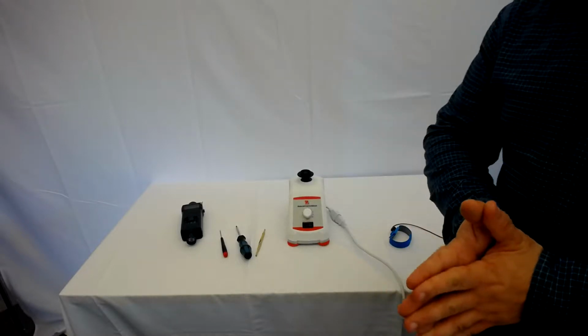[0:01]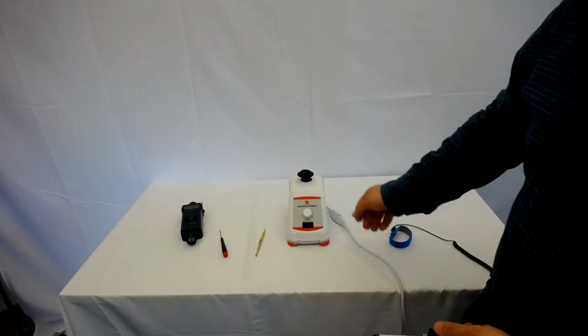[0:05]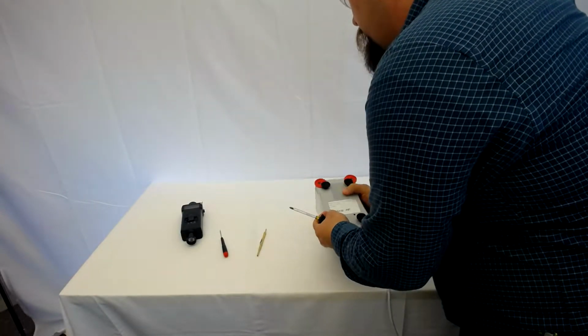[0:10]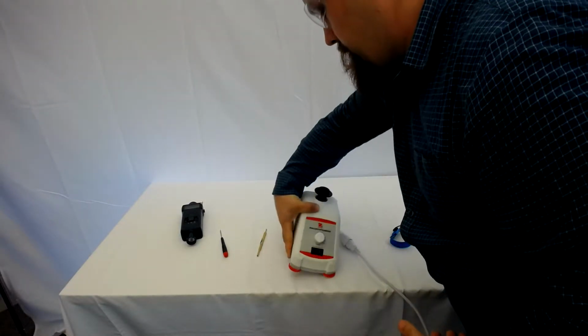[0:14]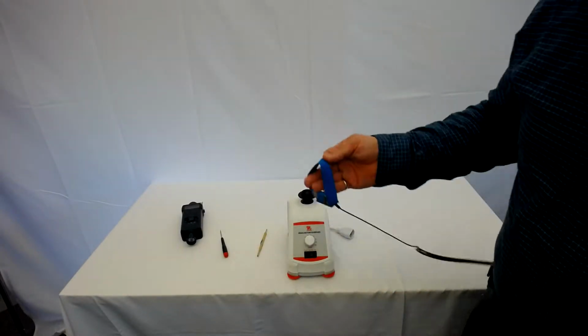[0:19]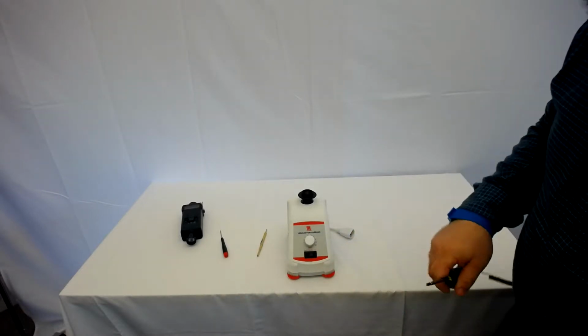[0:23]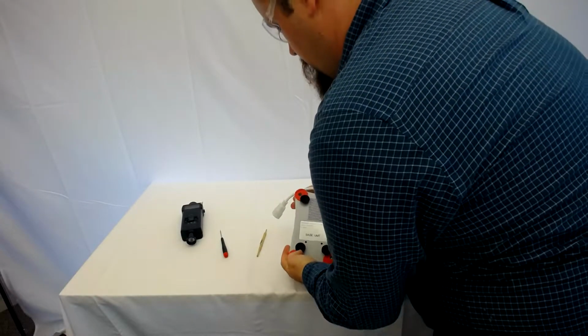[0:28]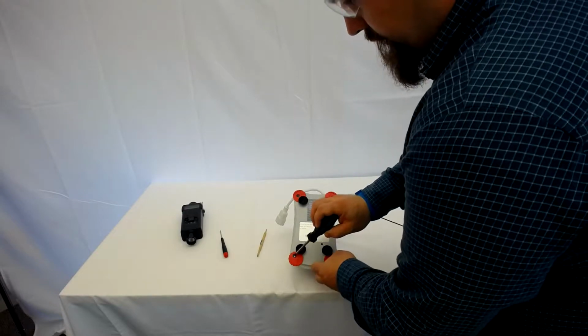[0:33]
So to start to take this apart, you are going to take your screwdriver, flip the unit over. There are 4 screws that you're going to take out now. Right now, we're going to have this unplugged. Again, always use your ESD protection. Flip the unit over. 4 screws here, here, here, and here.
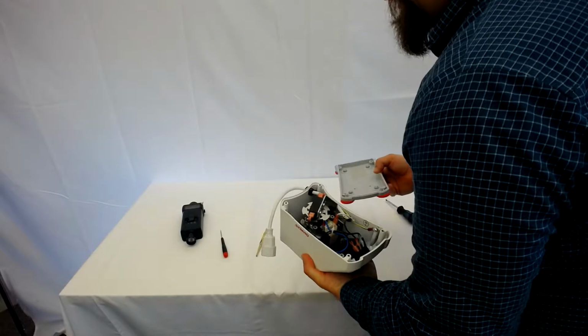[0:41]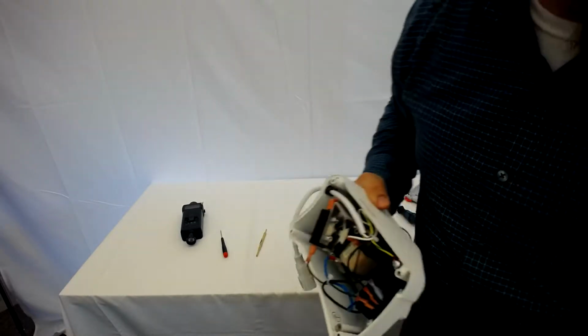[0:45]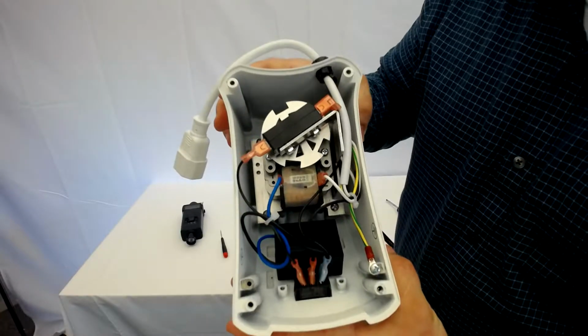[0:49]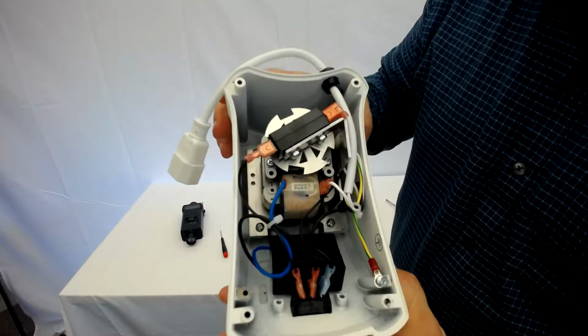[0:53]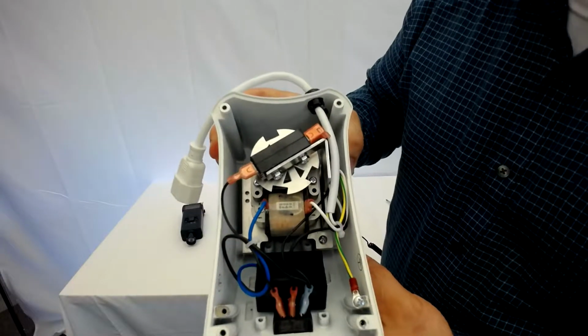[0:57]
You're going to remove. I have already done that, so we can take this off, and the bottom just comes off. You're going to check for workmanship on the inside. Make sure all the wire routing looks like this, that there's nothing getting into the motor over here particularly.
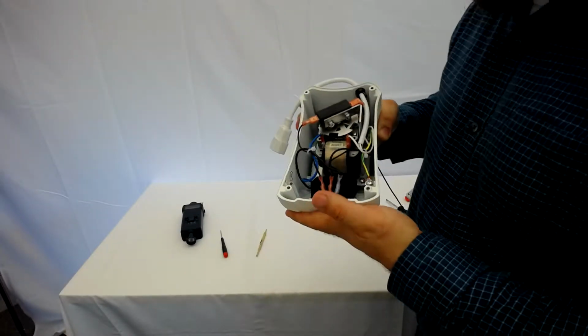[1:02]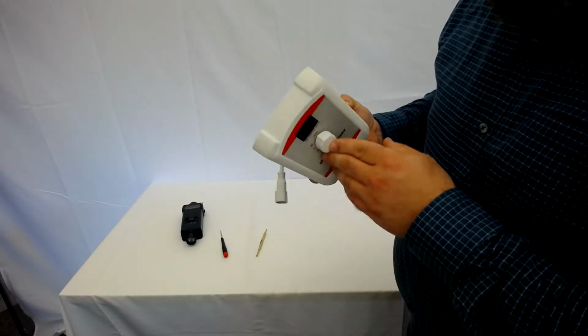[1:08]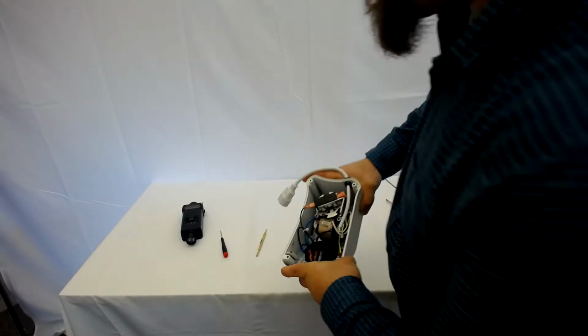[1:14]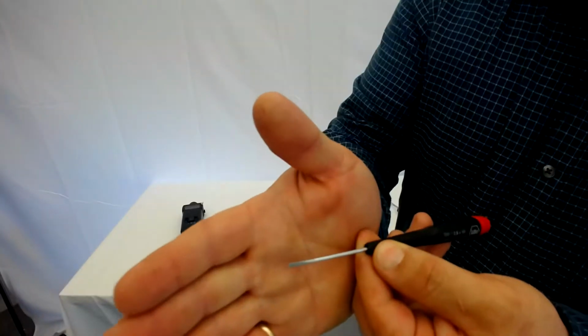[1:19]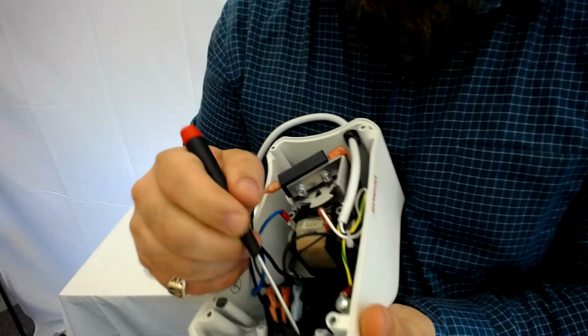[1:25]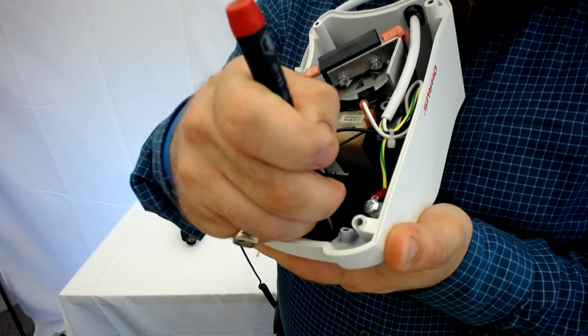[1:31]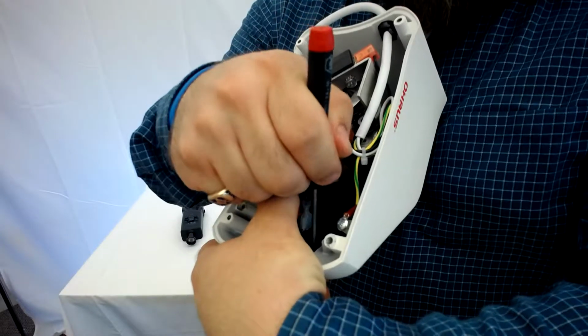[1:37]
All right, next, on 120-volt units only, you're going to remove the power switch here. So to do that, you're going to take your mini flathead screwdriver. You're going to come in onto the tabs of this switch, pressing down slightly. You're going to push each of them in one at a time.
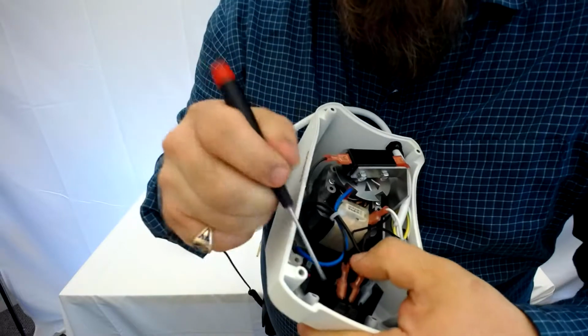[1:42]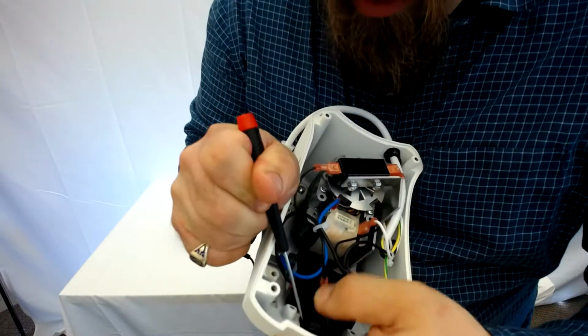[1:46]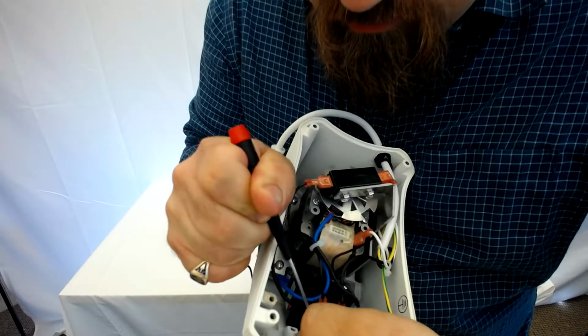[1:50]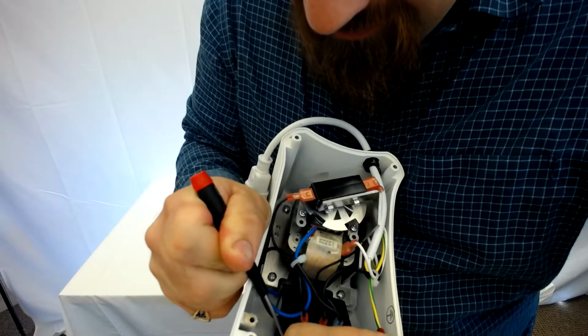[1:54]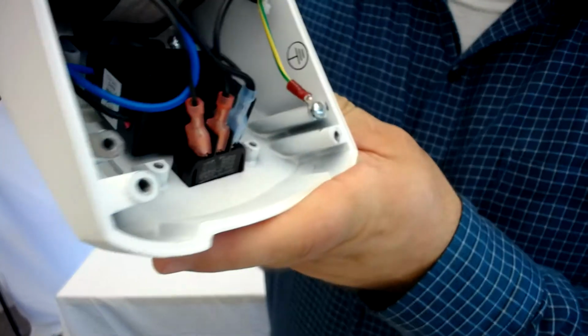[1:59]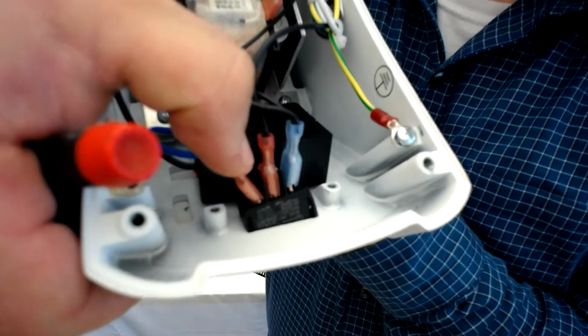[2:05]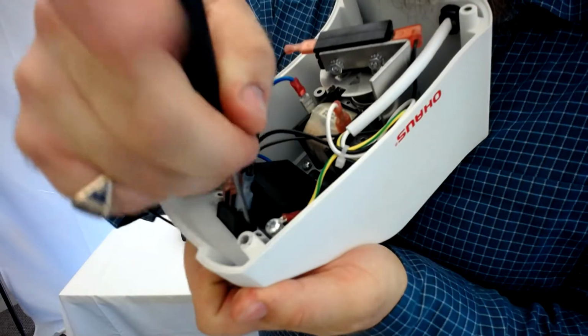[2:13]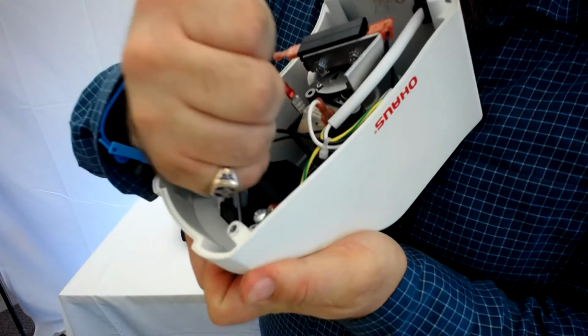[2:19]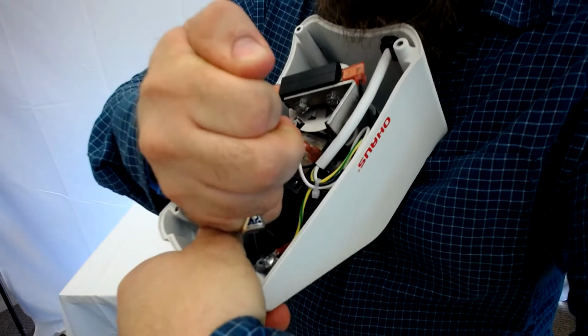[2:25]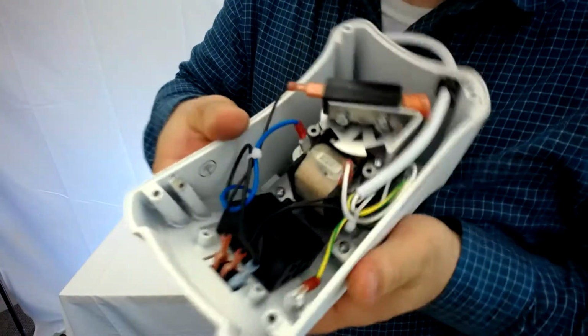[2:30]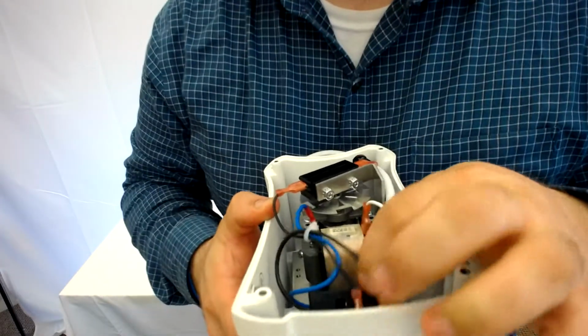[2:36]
There we go. You can see here I have one side somewhat out. That loosens the one side. And then I'm going to go around the other side and push on those tabs until I pop the other side out. A little bit of downward pressure, a little bit of pushing on the tabs, and there we go. That pops out.
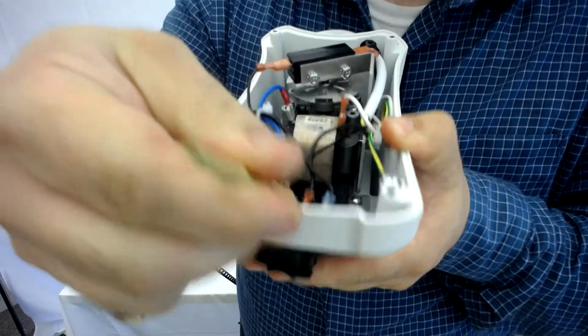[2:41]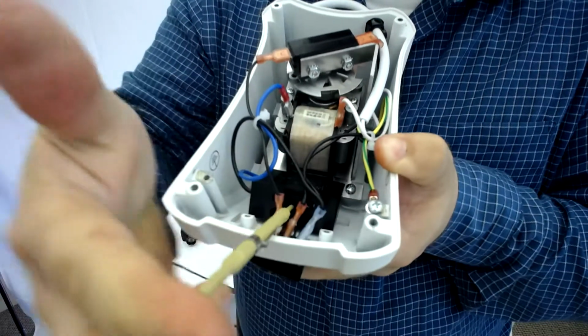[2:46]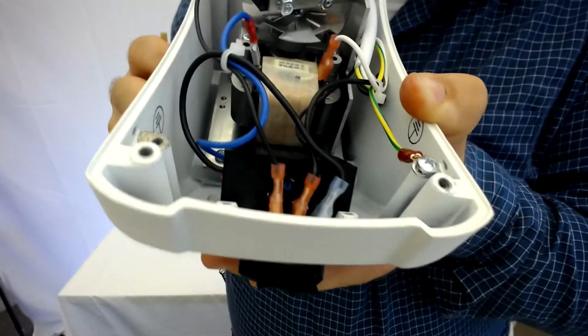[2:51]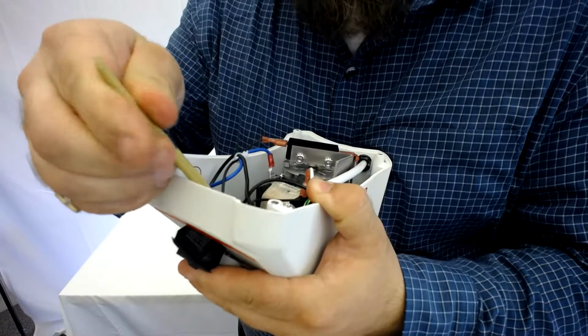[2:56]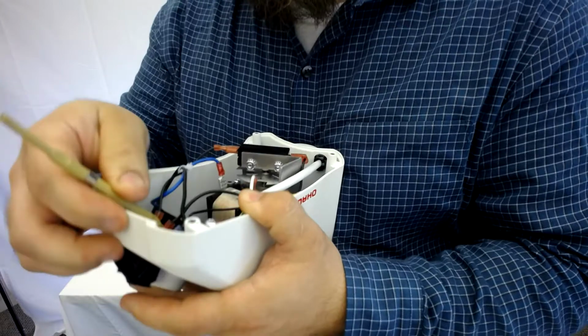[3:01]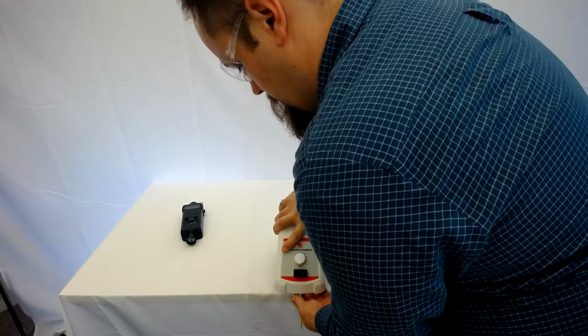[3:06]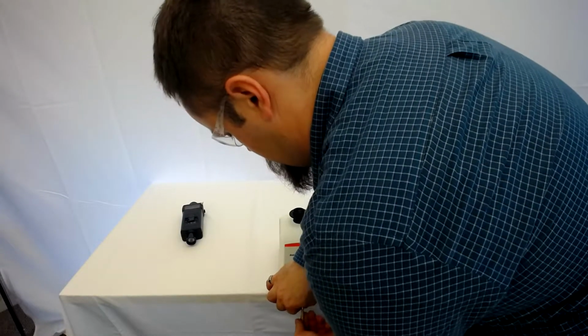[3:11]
What that does is it gets us to be able to go right in here to the potentiometer. And if you can see in there, there's a little blue potentiometer switch. So you put your tool in, you're going to turn it all the way down. Leave the tool in as you come here.
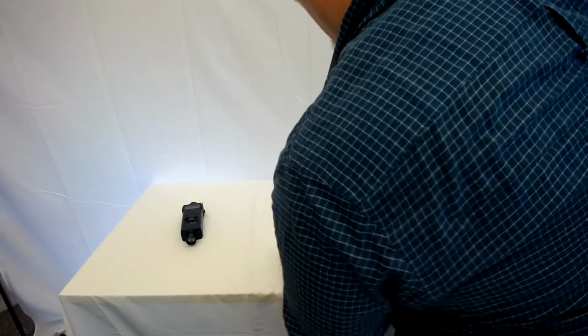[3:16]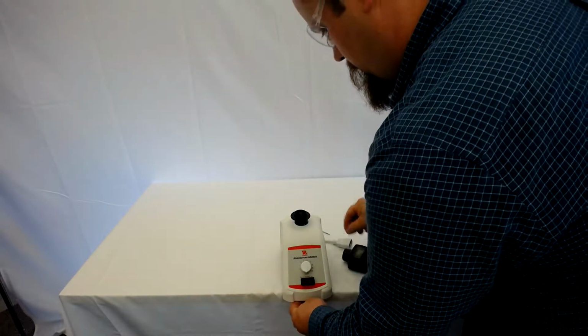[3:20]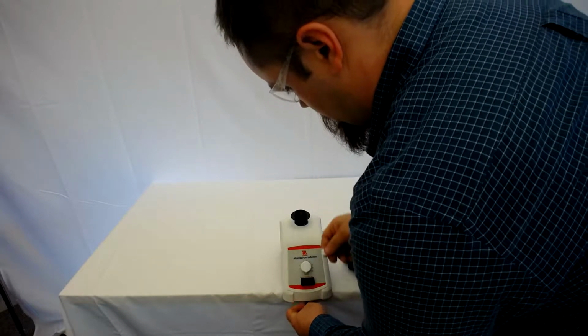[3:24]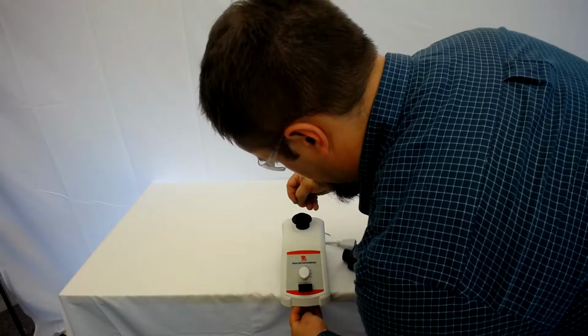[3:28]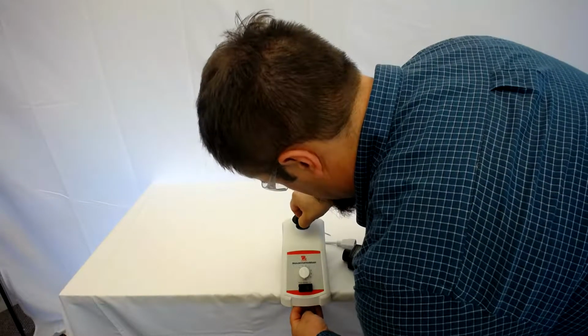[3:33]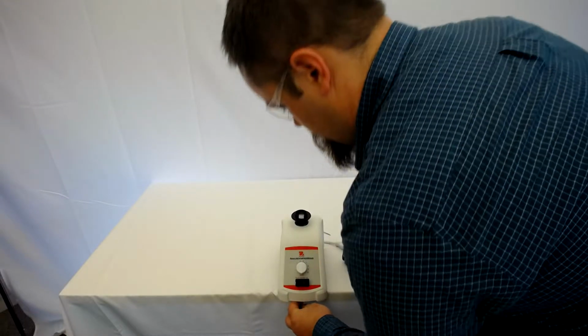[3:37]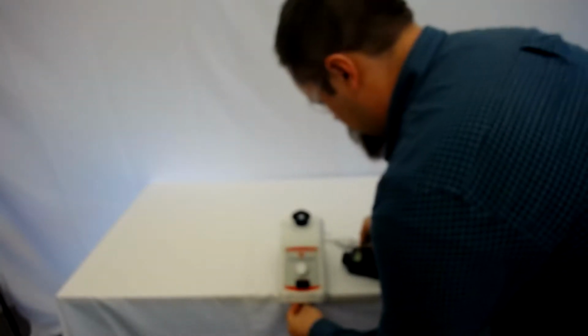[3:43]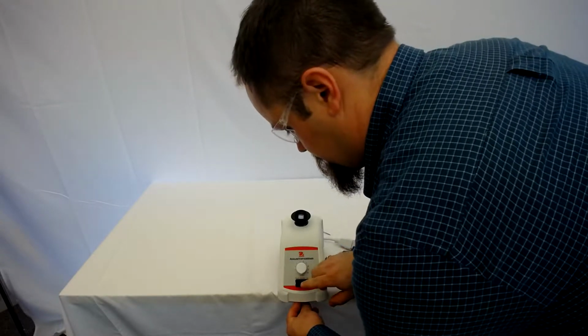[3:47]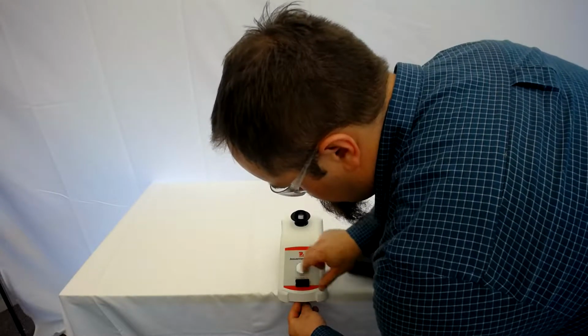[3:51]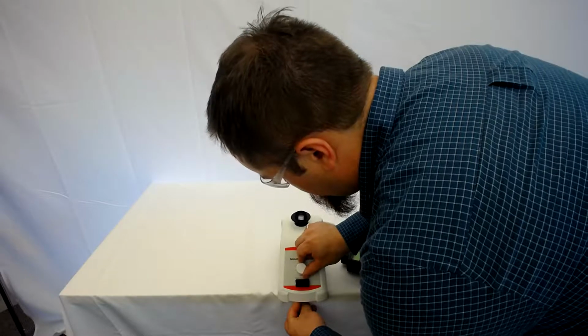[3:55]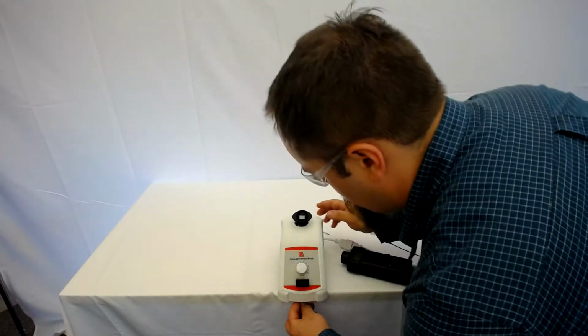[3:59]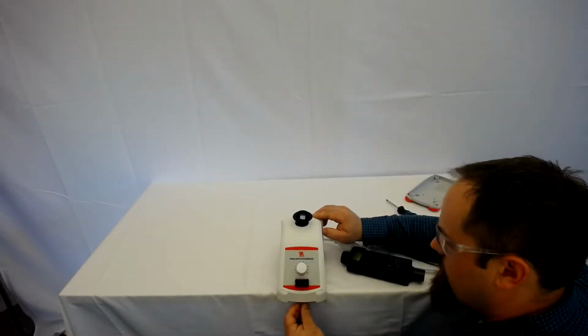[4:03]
Next, we're going to put a little reflective tape on here. Going to plug the unit into power source. Bring it to 1. Turn it on. We might need to raise it up in order to bring it back down. And we're just going to adjust it so that it's going fairly slow.
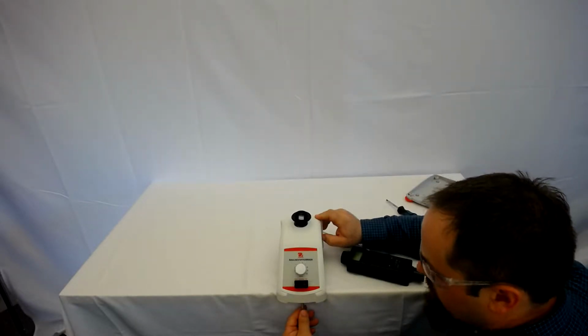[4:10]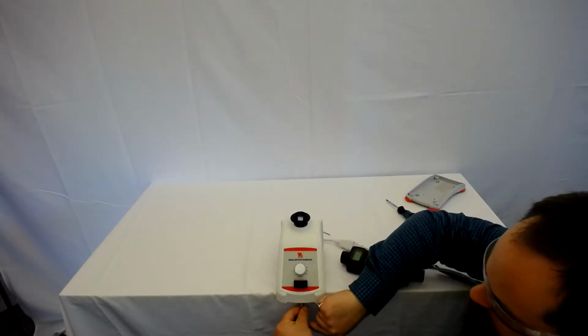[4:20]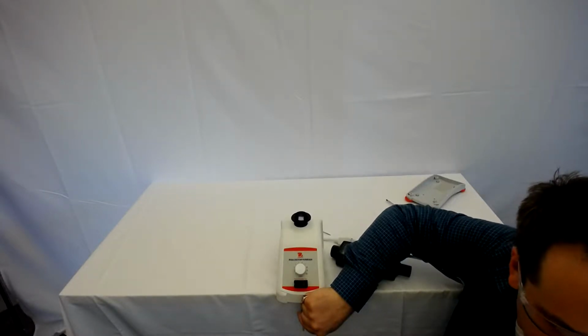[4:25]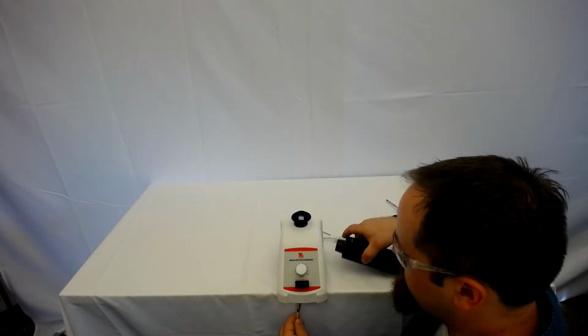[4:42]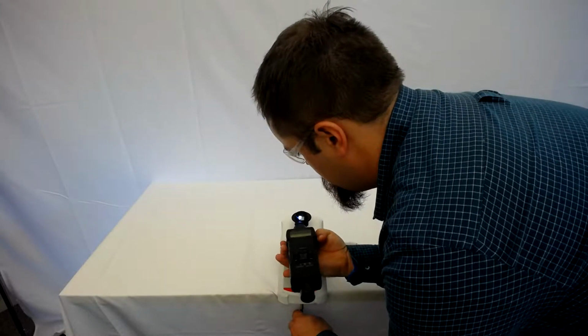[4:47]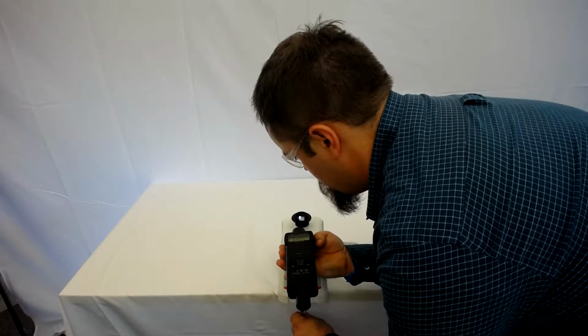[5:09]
So it stopped right now because I turned it all the way down. I'm going to adjust this to going slow. And we want this to be going 500 RPM plus or minus 150. A little bit faster than that. A bit too fast. Adjust it back down. There we go.
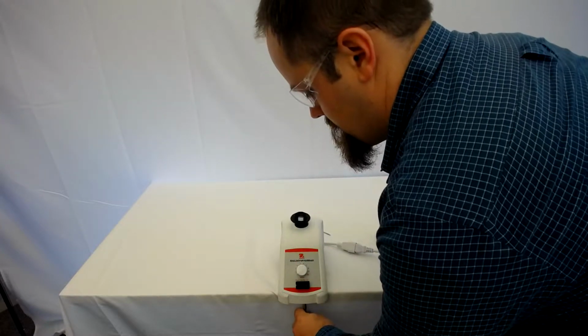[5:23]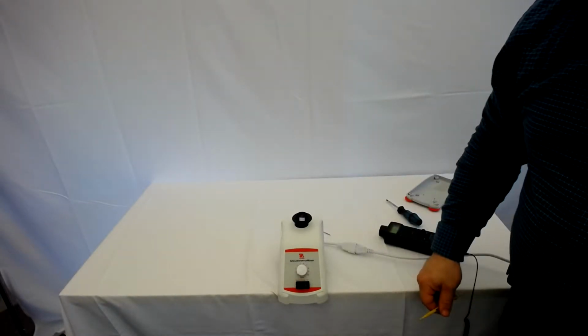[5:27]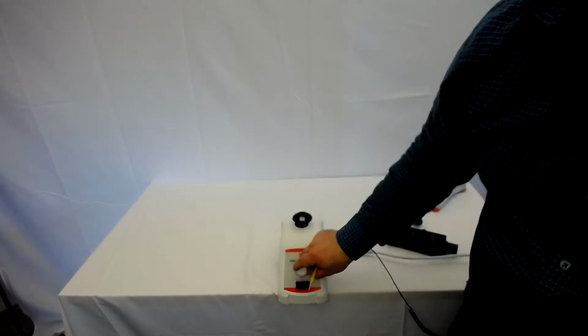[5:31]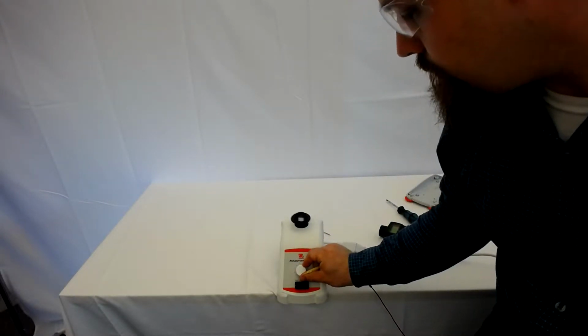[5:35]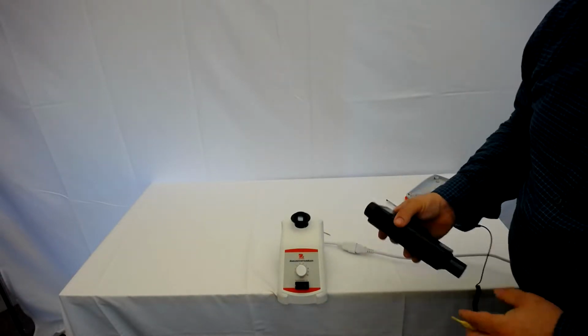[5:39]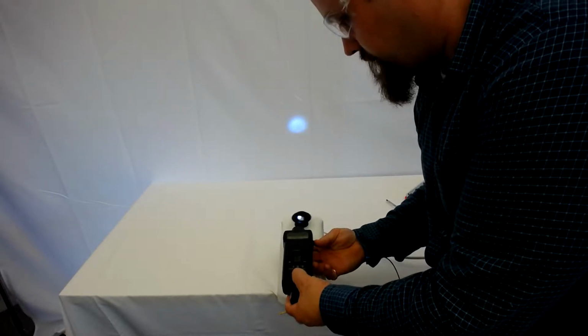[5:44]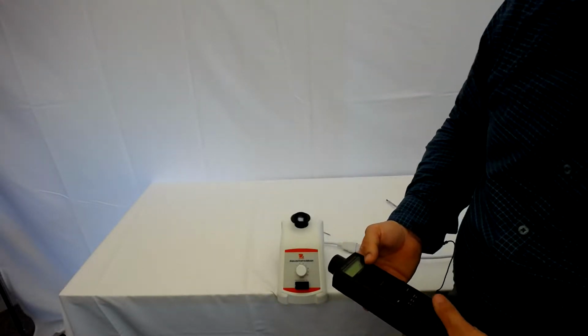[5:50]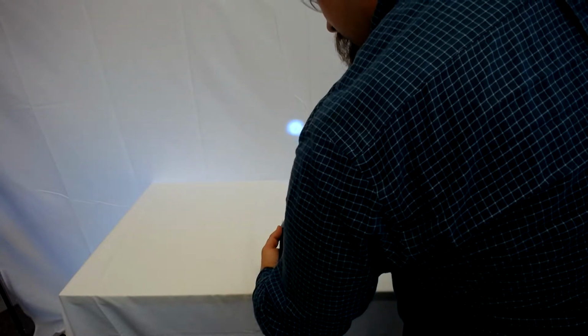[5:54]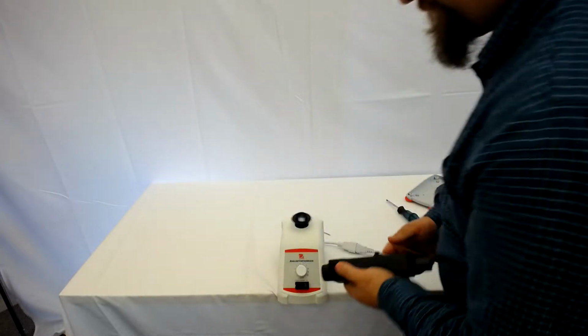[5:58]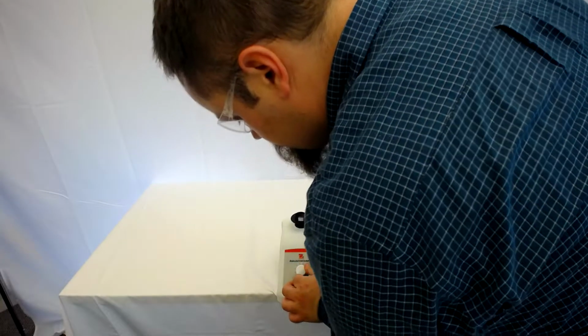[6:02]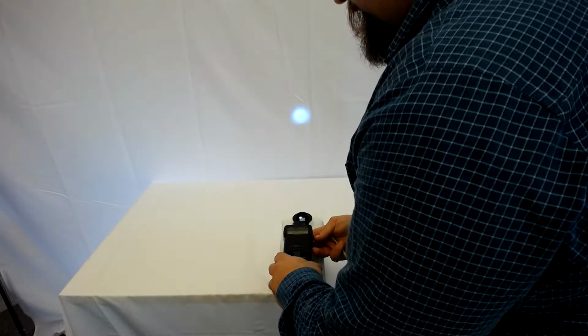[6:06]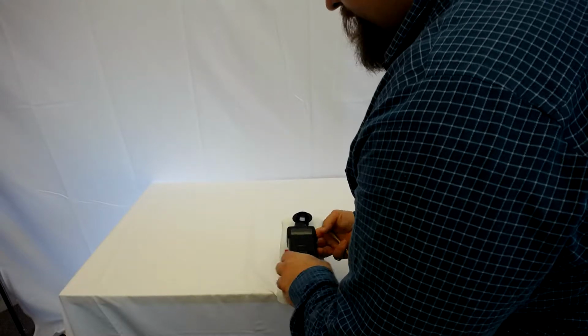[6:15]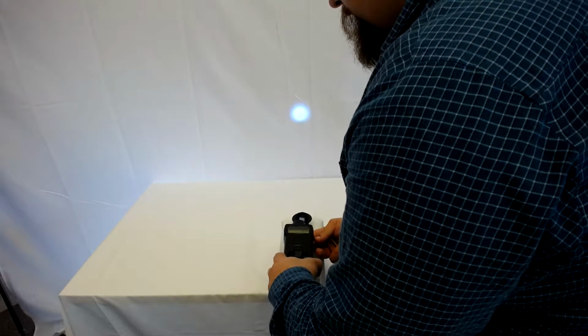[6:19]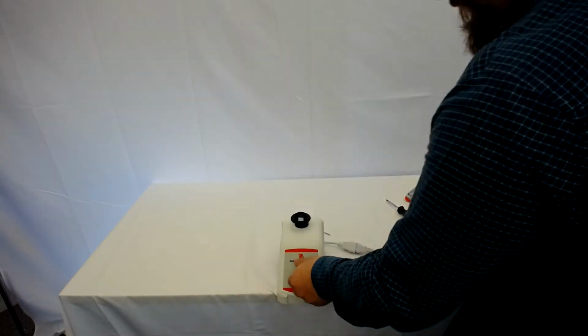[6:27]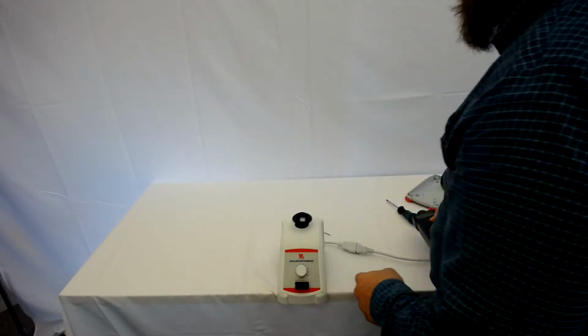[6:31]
All right, now we're going to turn this to the 5 position. Make sure it increases in speed. And we're going to look for 1250 RPM. Five. Great. Okay, that's in. The low speed, we turn it up to 5.
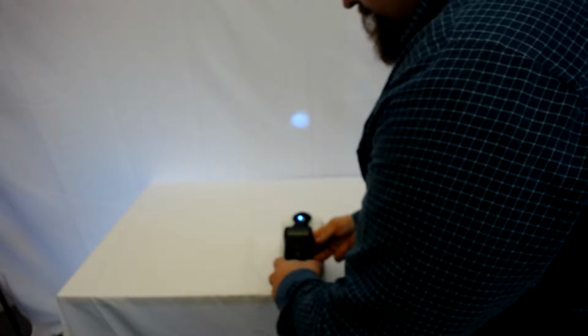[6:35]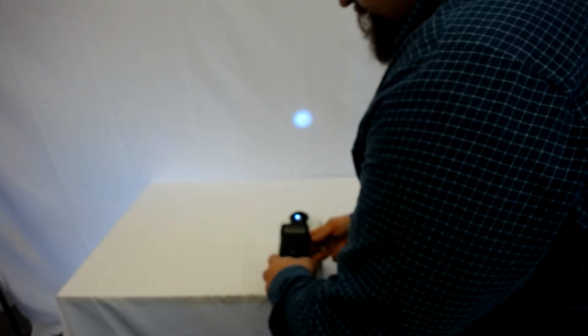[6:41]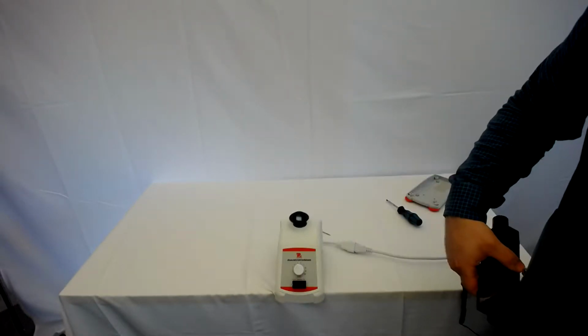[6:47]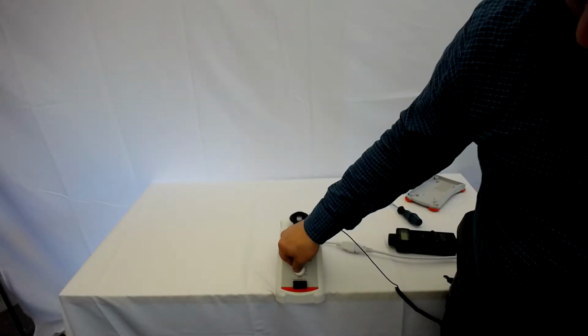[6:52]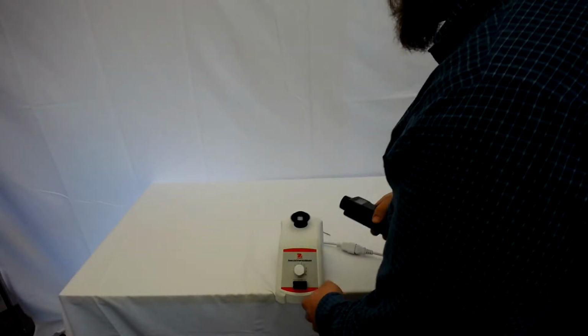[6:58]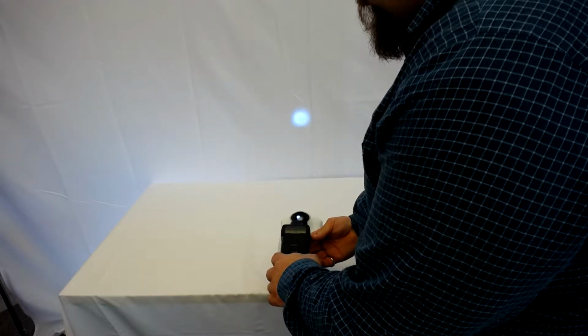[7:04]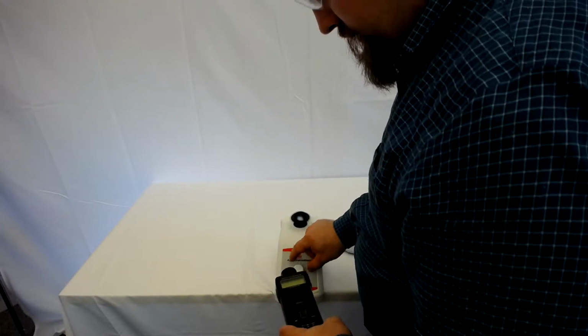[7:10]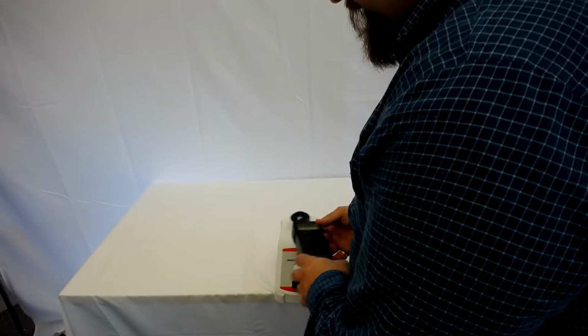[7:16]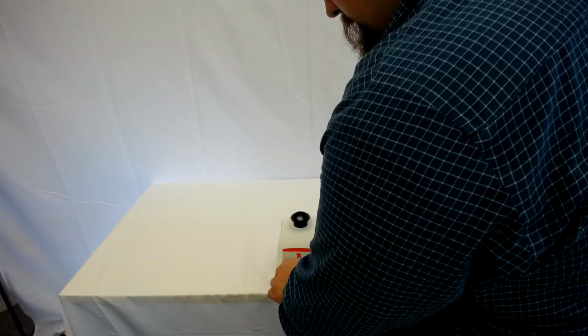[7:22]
I'm getting 2500 RPM instead of the 1250 RPM at 5. 2500. Yep. So like double. Turn it up to 10. Which I don't understand because 10 I got it in before. It should be between 3000 and 3500. This is like 28, 10. 2800, almost exact. 2803. Turn it down to 5. 5 should be between 1000 and 1500.
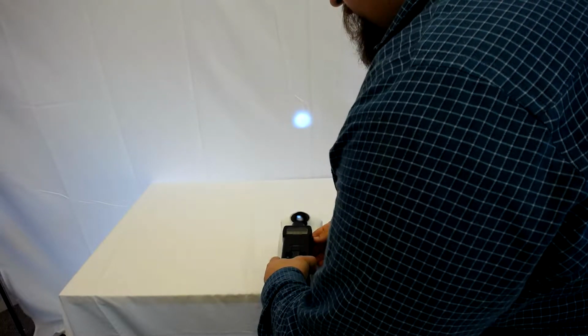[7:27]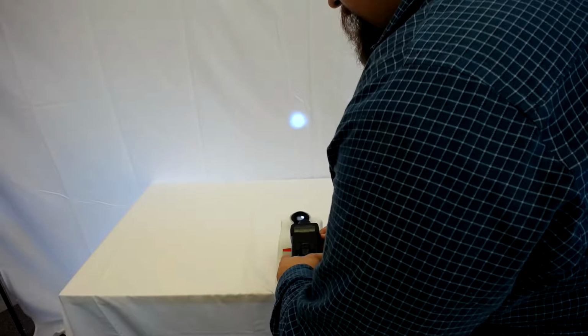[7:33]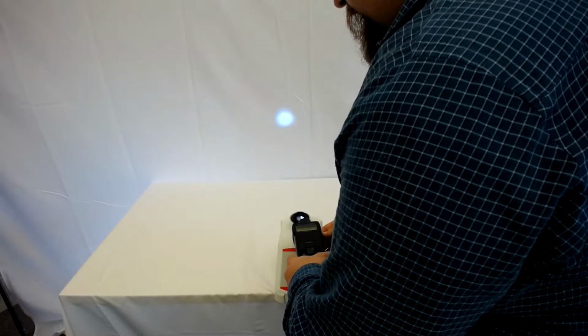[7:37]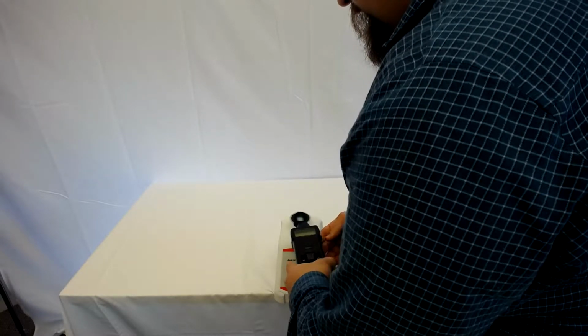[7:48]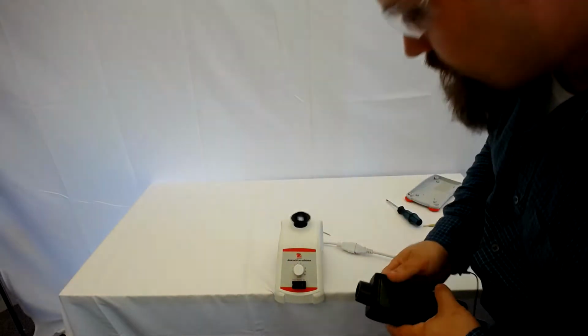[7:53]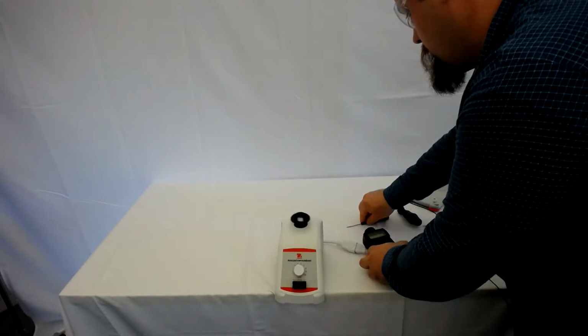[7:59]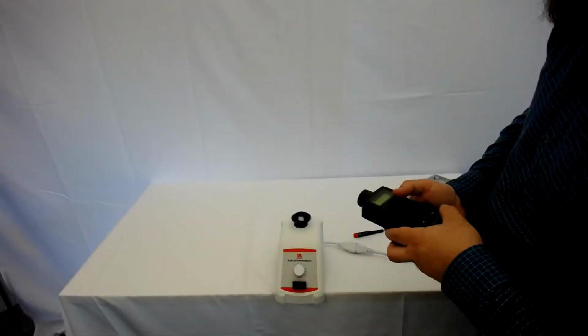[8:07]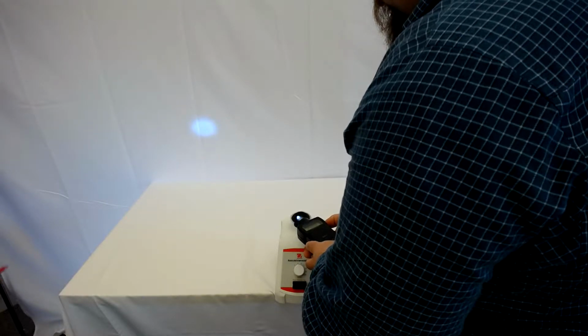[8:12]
Still getting 2500. Could there be doubling even with the reflective tape? Shouldn't be. This isn't going all the way around. See, the other one was doubling because it's getting one here and one there. This, because it's going around like that, only has one side hitting it at any point in time. So at 5, it was 2500, and at 10, it's 2800. Yeah. Very little difference. 2800 exact.
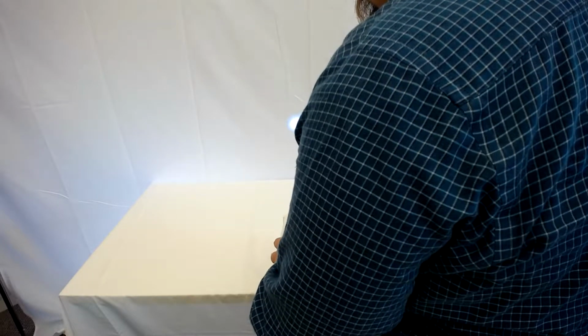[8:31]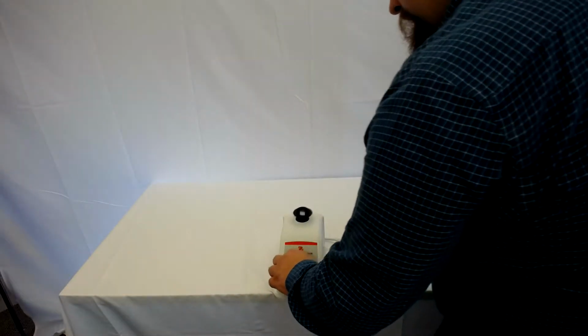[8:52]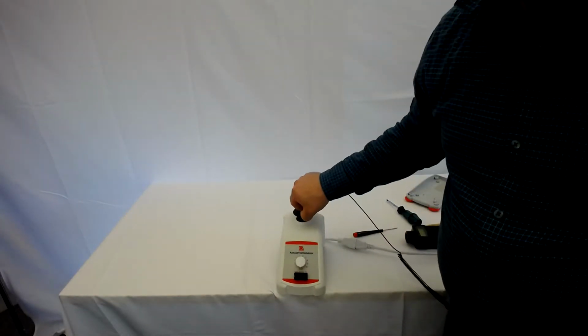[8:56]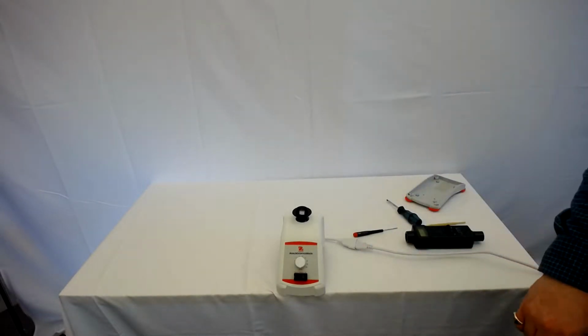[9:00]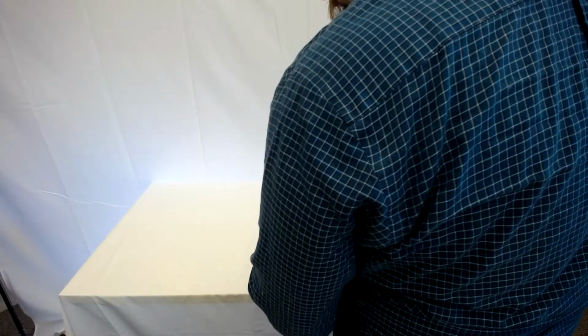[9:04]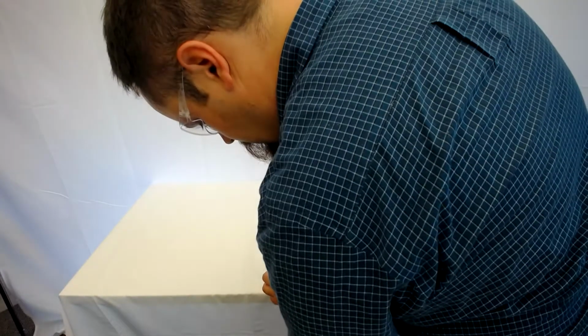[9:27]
5. 2524. 2519. 2523. I think it's how it's reading it. 2510, 2514. 2515. Do you want to try calibrating again? Let's bring it back to 1 and see if it needs to be. I don't think it'll need to be.
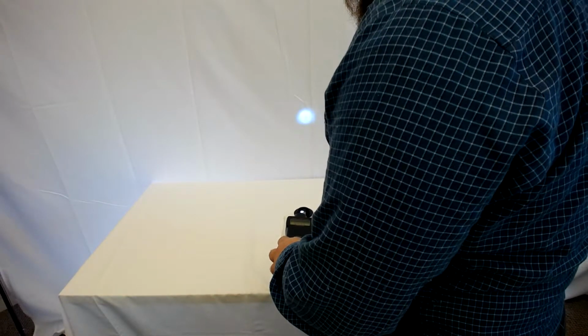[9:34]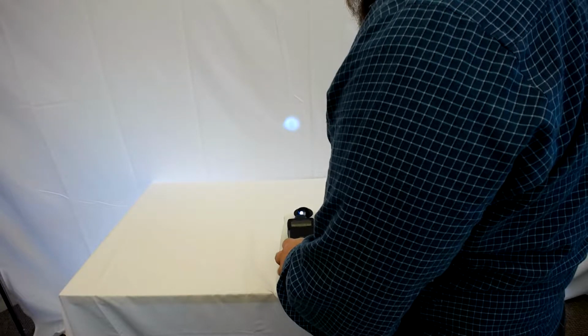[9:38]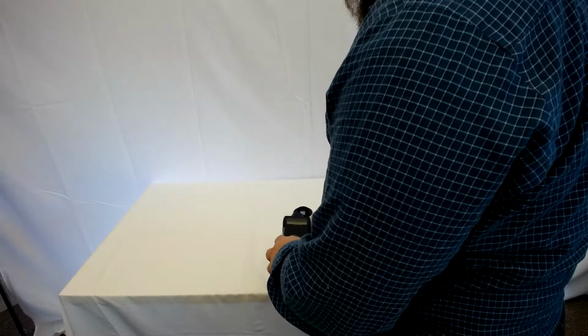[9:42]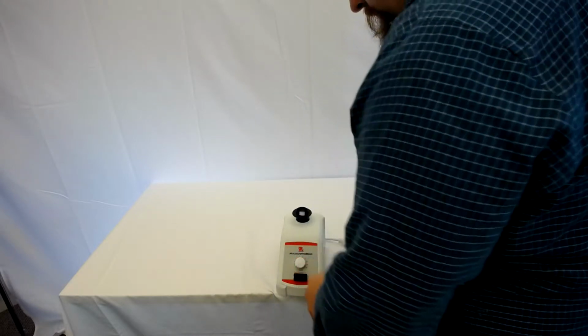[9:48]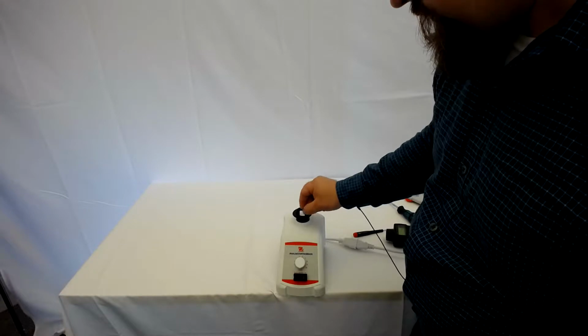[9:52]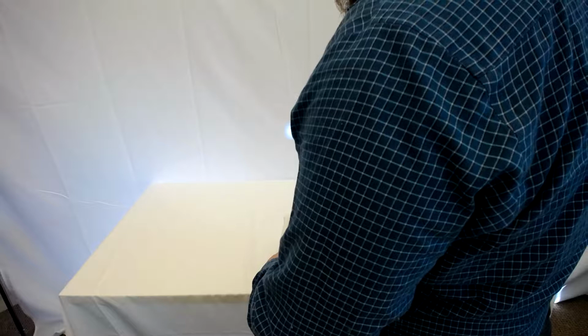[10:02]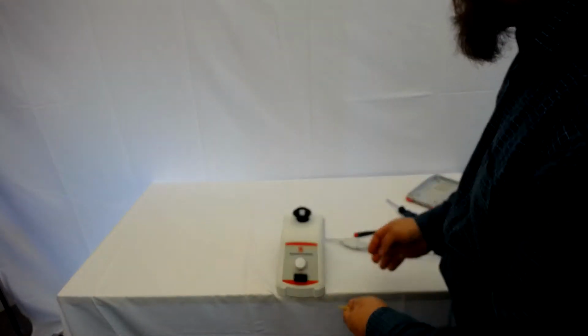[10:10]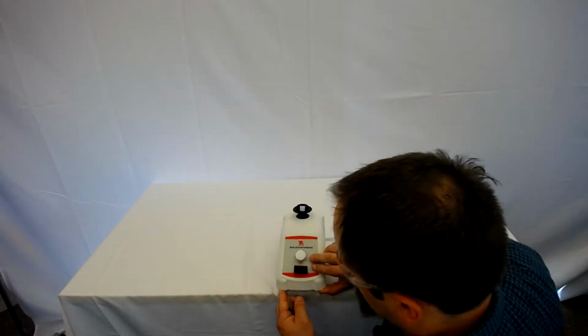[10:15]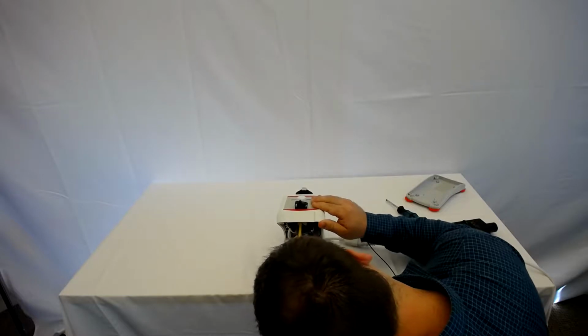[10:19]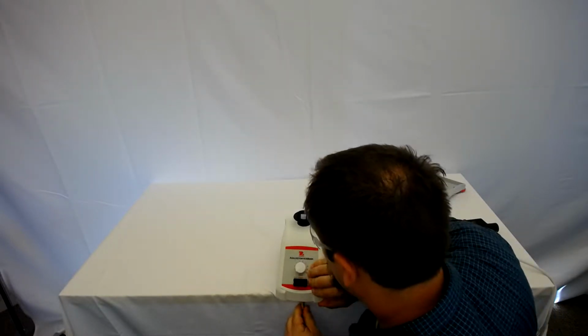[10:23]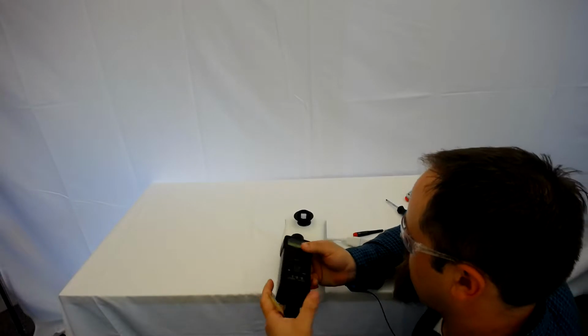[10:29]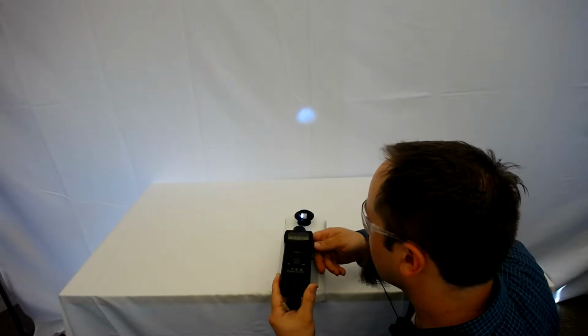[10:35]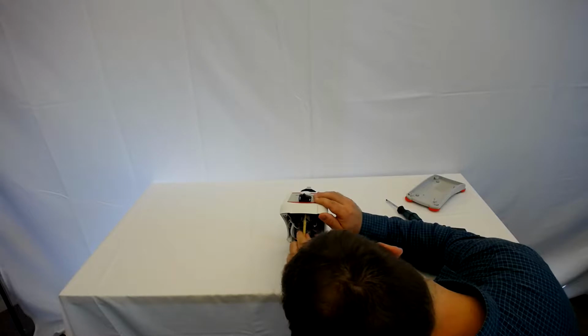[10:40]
Understand it. It says that it's 8 something. 806. At the one, okay. So the 5 is still 2500, and 1 is 806. Yep, that's what we have. 10. 2618. Yeah. Okay, so that's better. 2618 is on the high end, but still in the range.
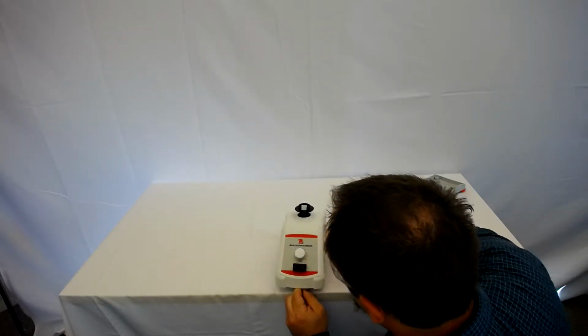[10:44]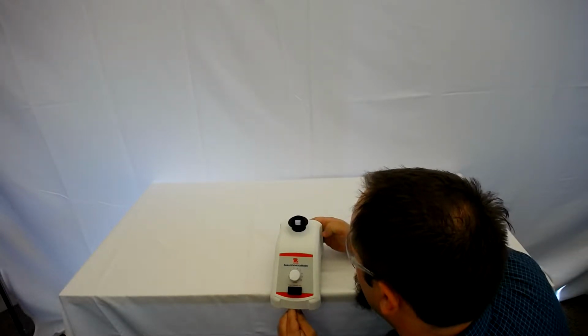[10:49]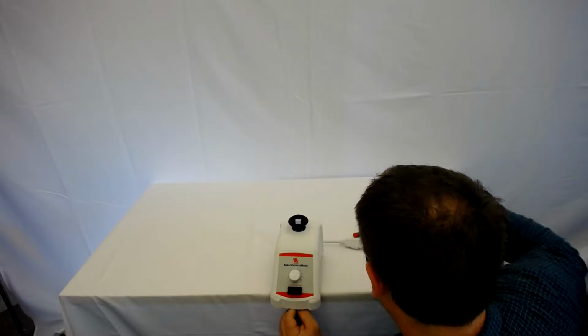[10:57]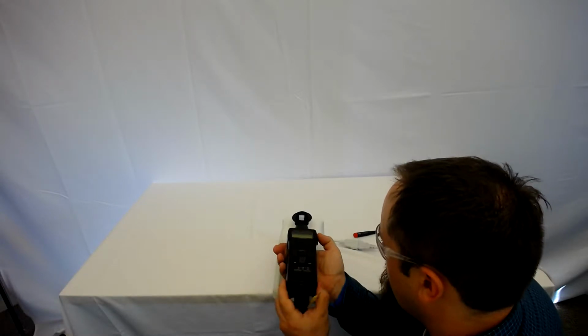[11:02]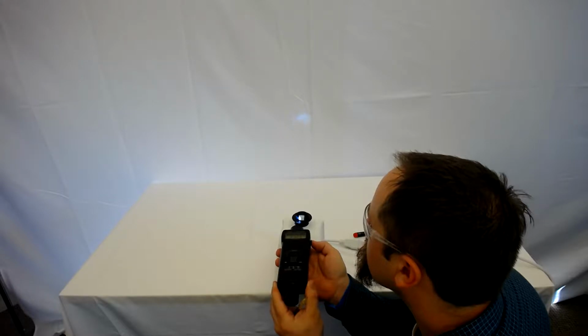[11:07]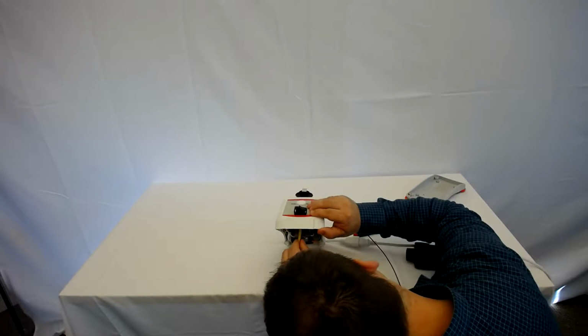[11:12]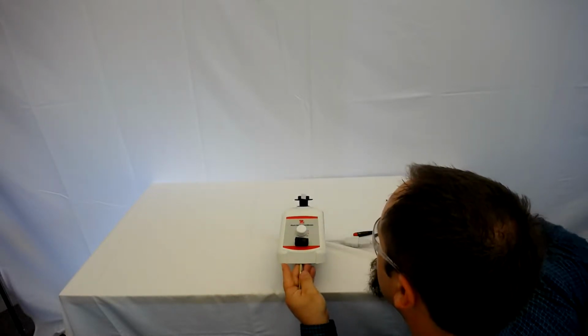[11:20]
But yeah, this you can really set. Oops, gone the wrong way. This you can really set. I can get it nice and slow. So you can try to get it as close to 500 as possible. Yeah. That's around 300. So at one setting it was too high and the other setting was too low. It's going to be tough to know what we want to get.
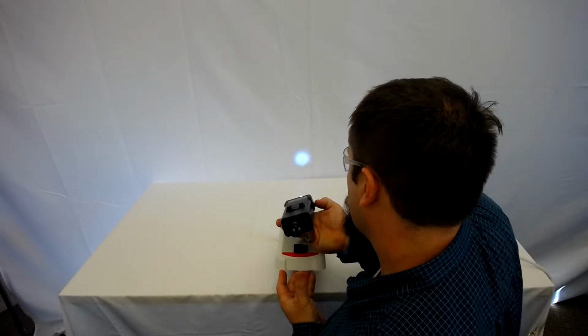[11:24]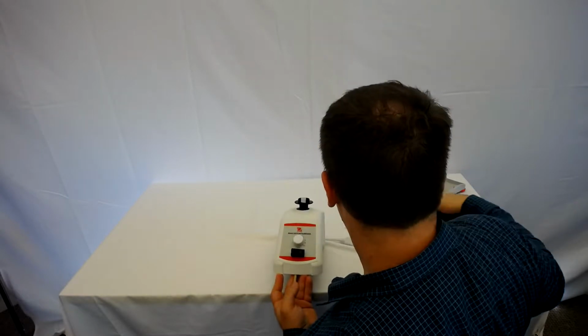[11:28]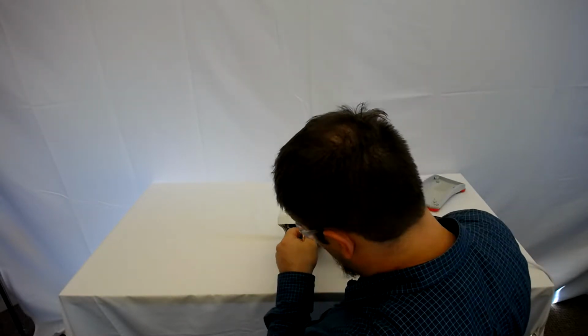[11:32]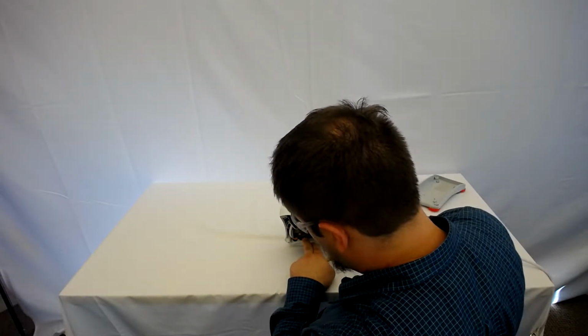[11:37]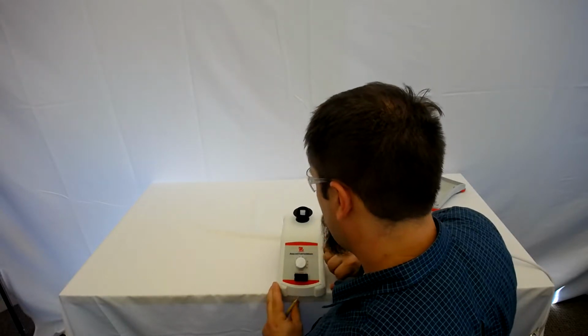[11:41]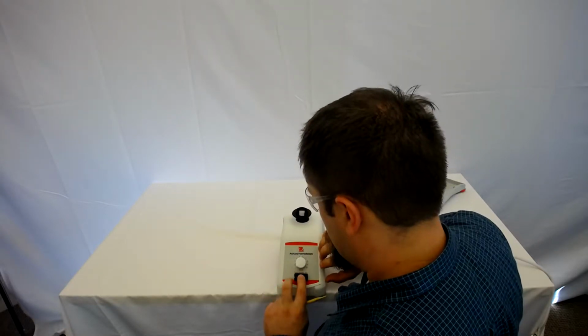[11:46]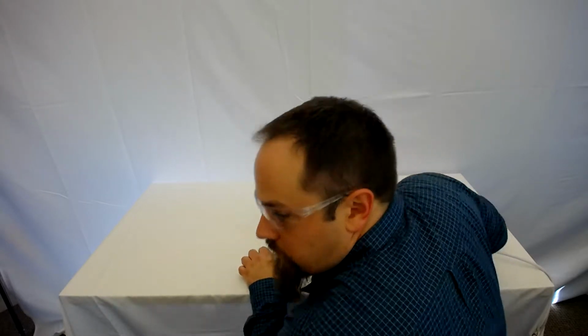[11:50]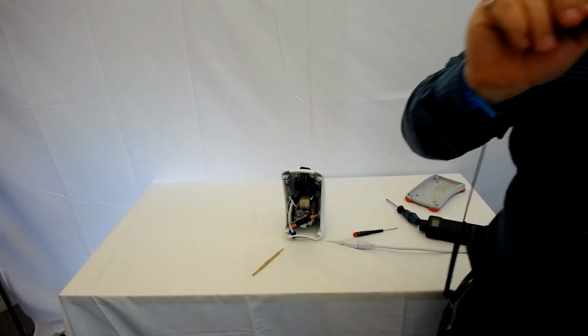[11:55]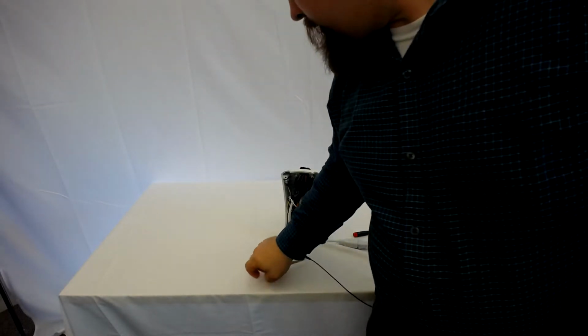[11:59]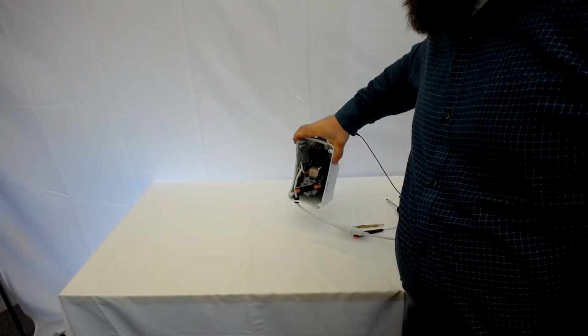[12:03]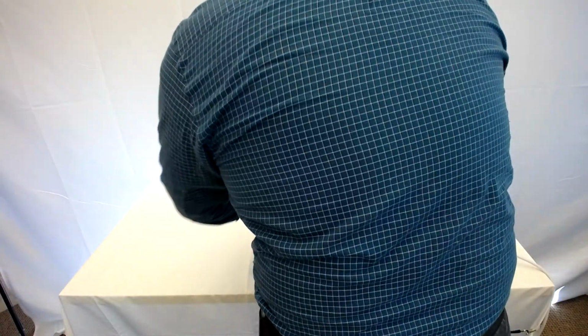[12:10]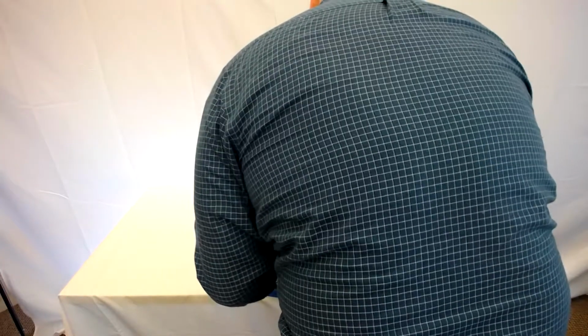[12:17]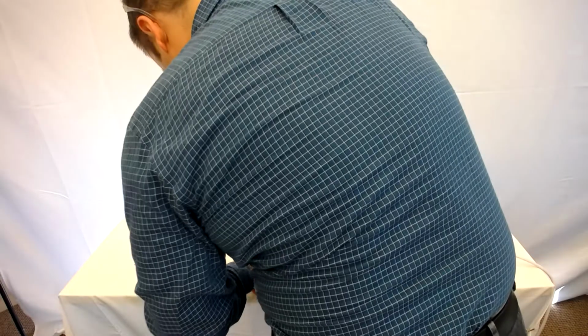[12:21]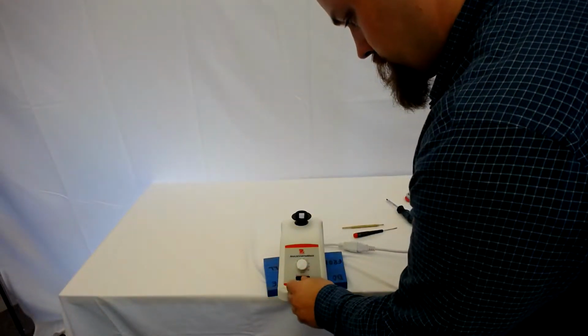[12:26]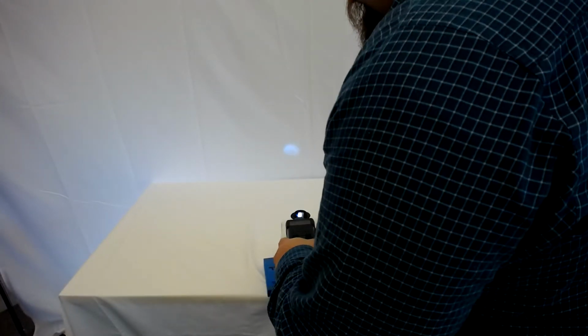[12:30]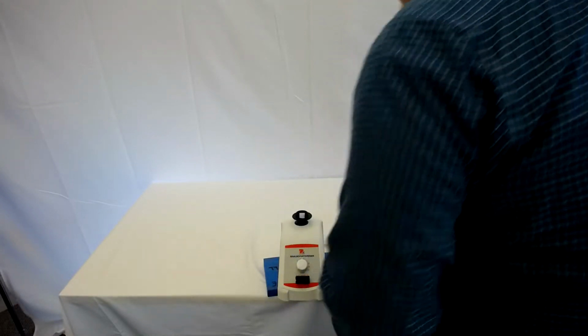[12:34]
Here's an issue. Do they have something that they test this on? Because as I'm pushing this in, as this sits down, it's slowing this. Oh, so we need to get a fixture for this. Same fixture? The testing. It's definitely when it's sitting on this switch, it's going slower, quite significantly slower. Well, it's not this fixture, but that'll help. You can see even now it's going almost 900 RPM.
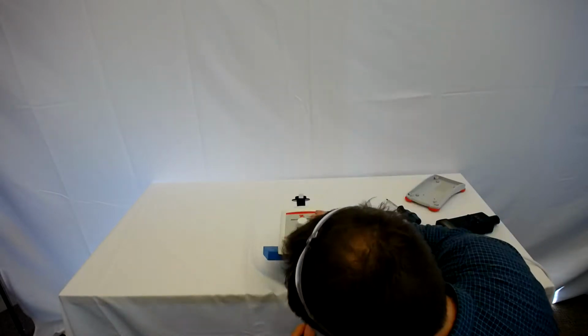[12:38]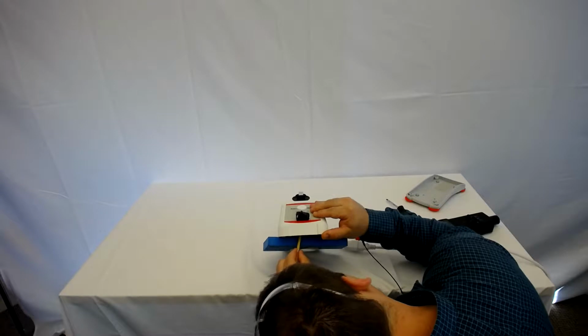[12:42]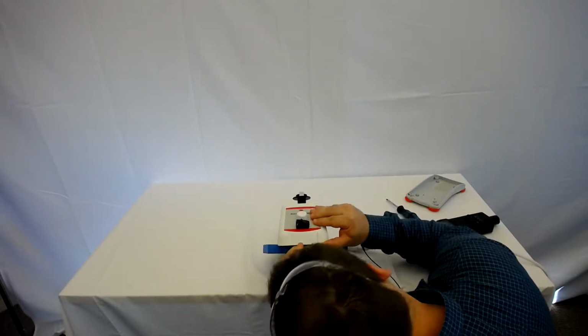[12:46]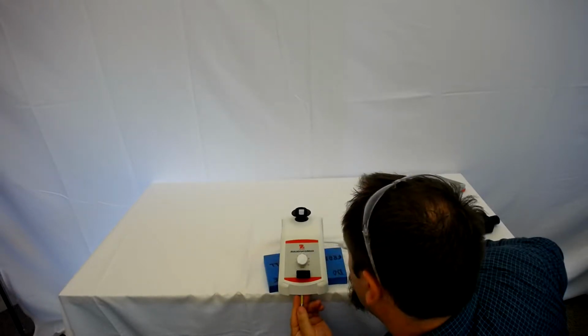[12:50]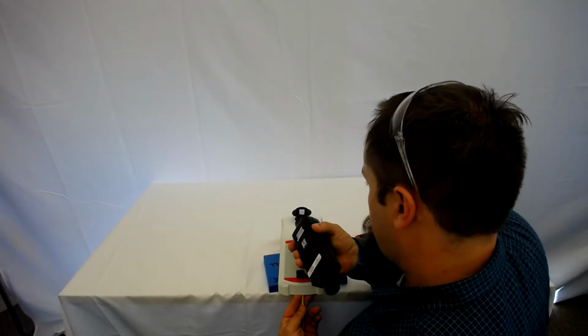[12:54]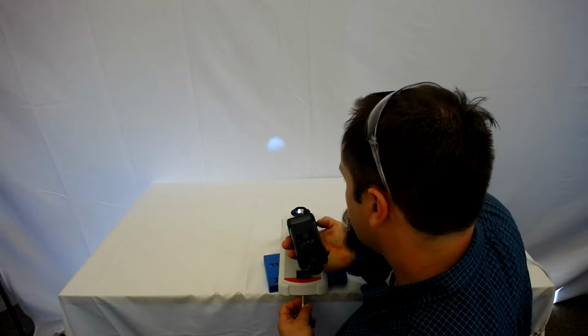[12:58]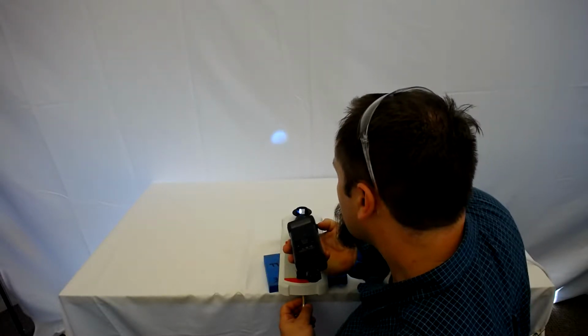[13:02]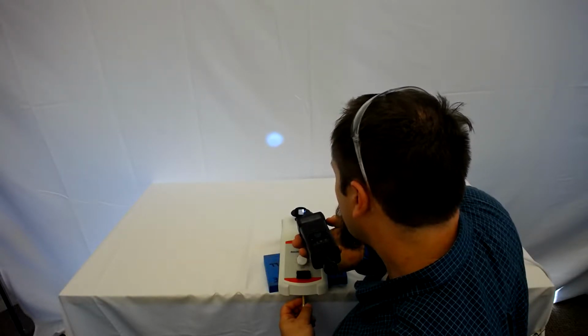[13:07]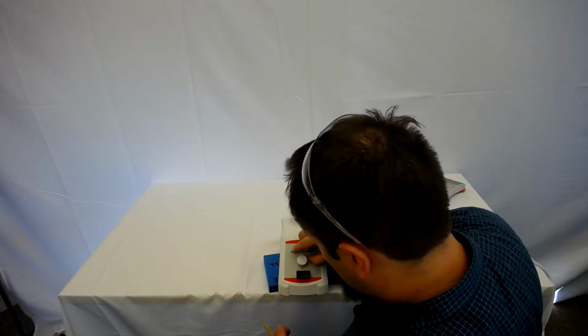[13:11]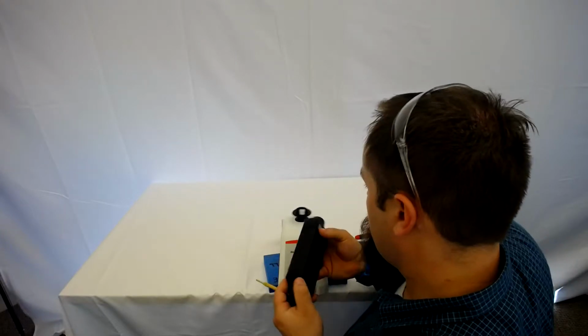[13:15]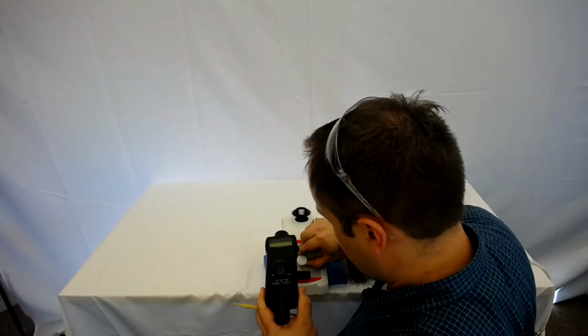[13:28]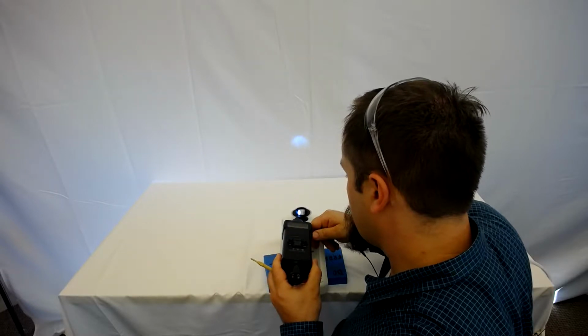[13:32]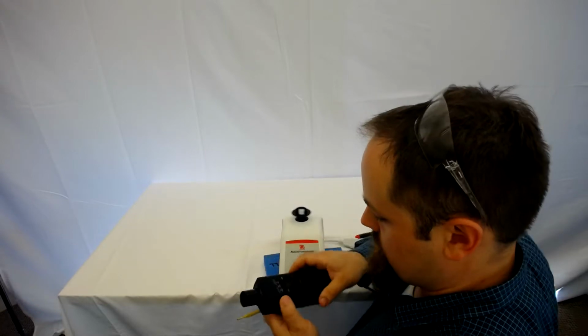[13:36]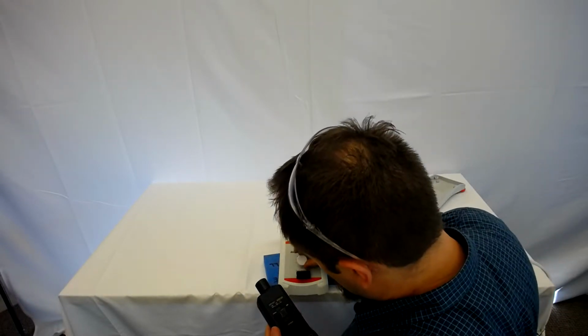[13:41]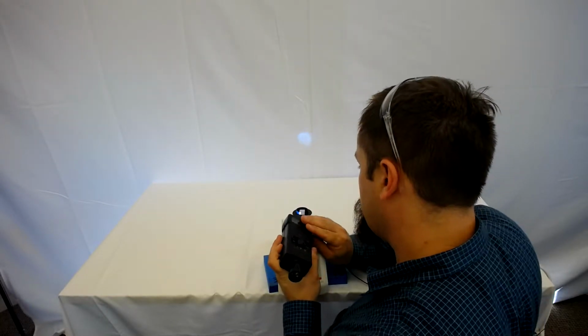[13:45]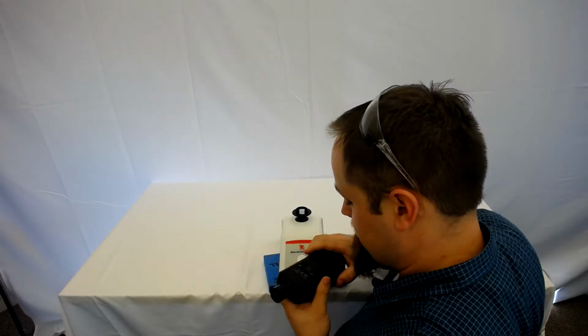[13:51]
459, 466. I mean, that's in. Let's see what it does at 5. 2500. 10. 2807. That's almost exactly. Yeah. Down to 1. Almost exactly 500.
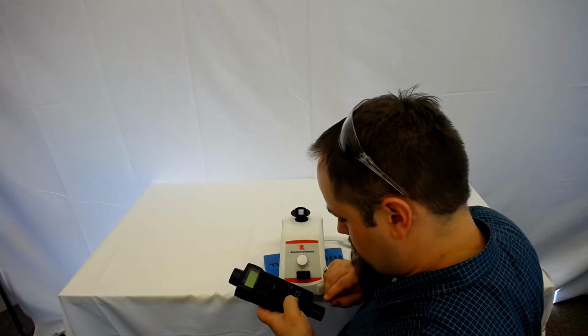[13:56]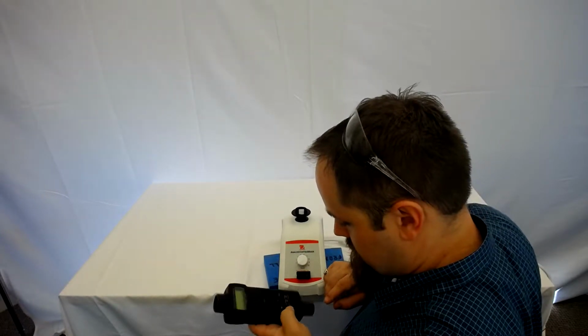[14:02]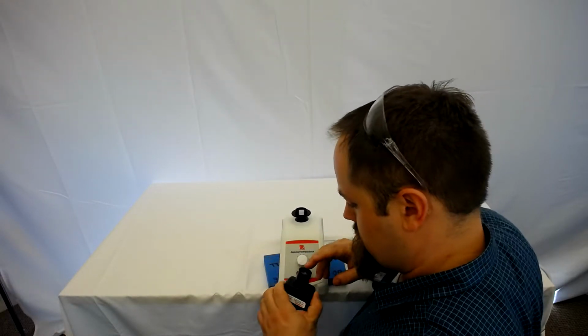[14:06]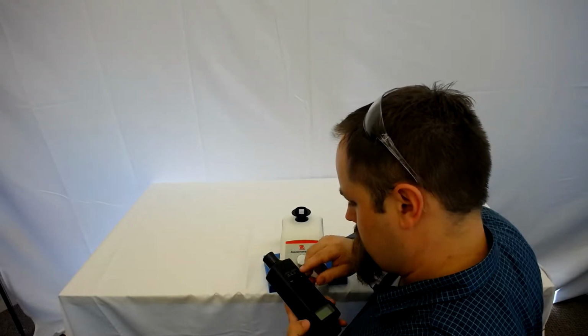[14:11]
All right, what we're going to do, can you turn out the lights? We're going to try a strobe. We have strobe here. Yeah, this is a strobe.
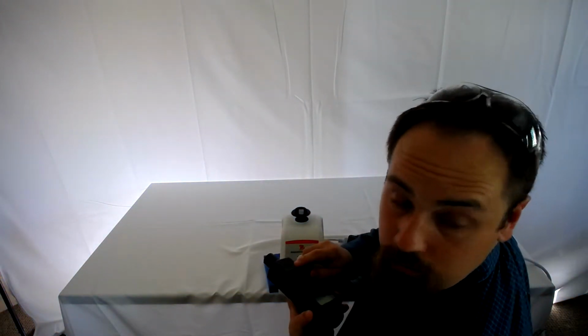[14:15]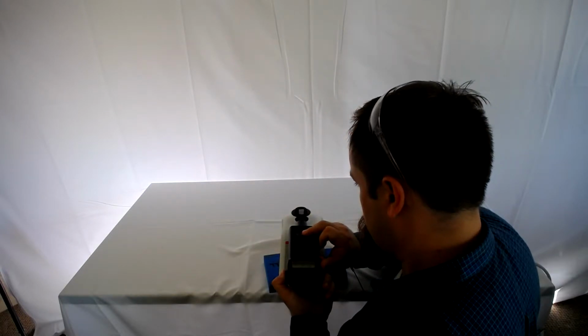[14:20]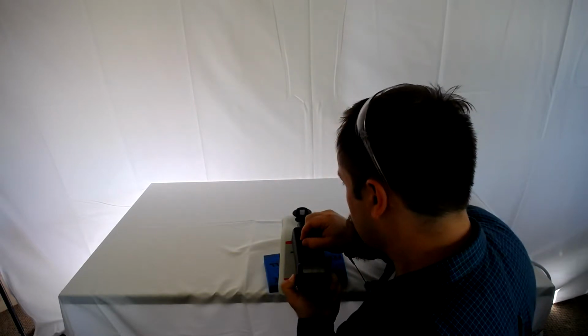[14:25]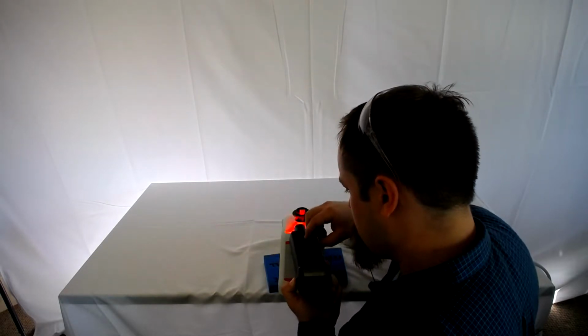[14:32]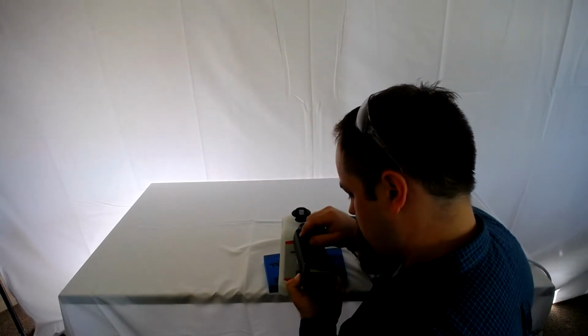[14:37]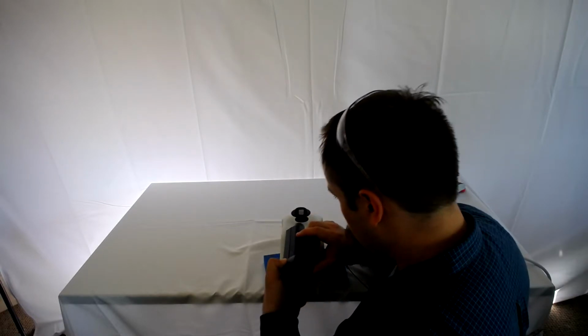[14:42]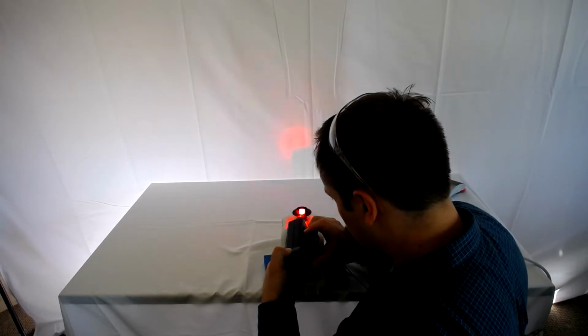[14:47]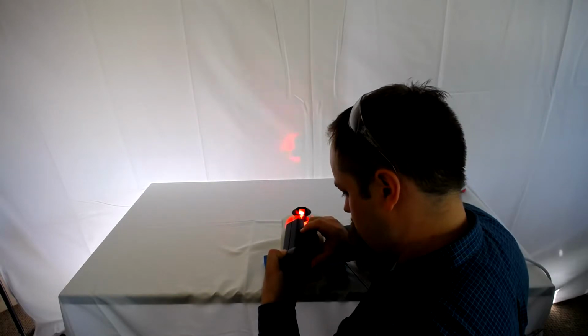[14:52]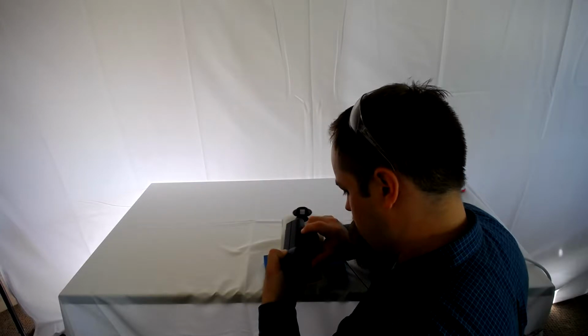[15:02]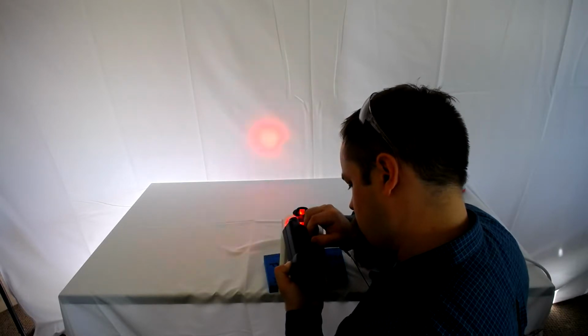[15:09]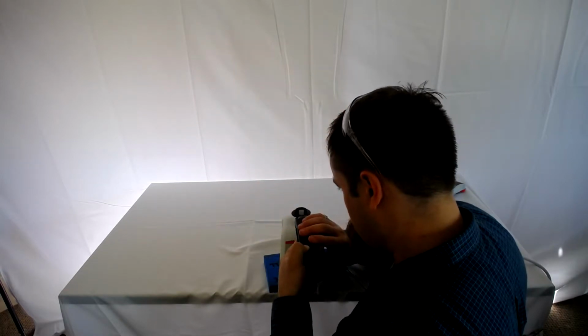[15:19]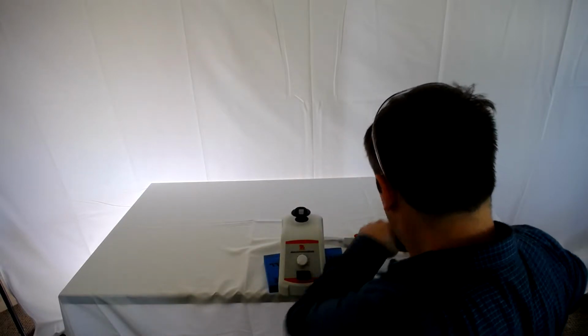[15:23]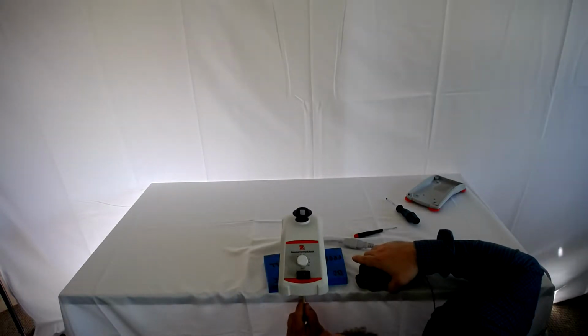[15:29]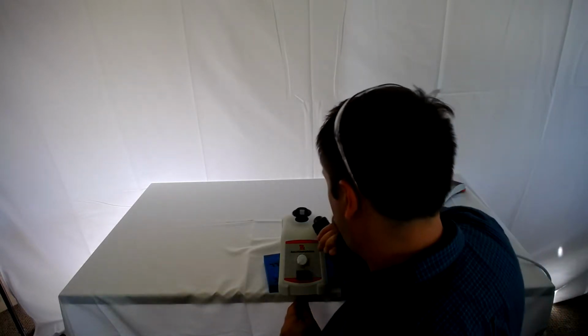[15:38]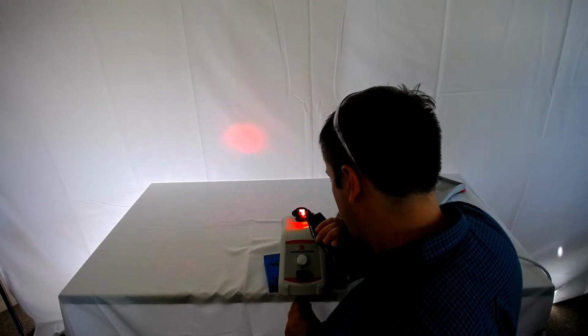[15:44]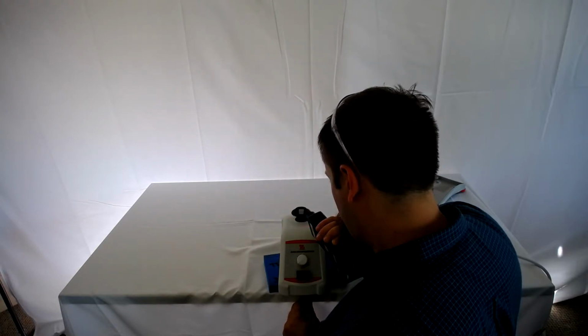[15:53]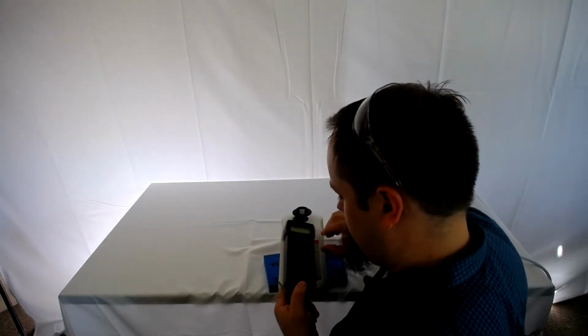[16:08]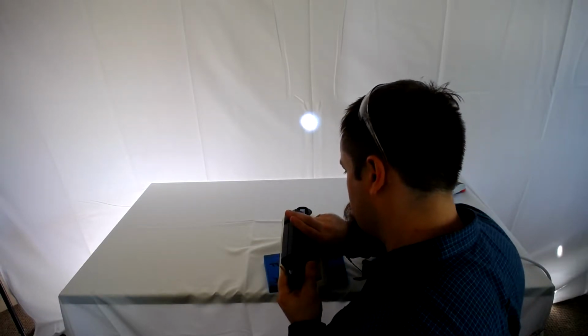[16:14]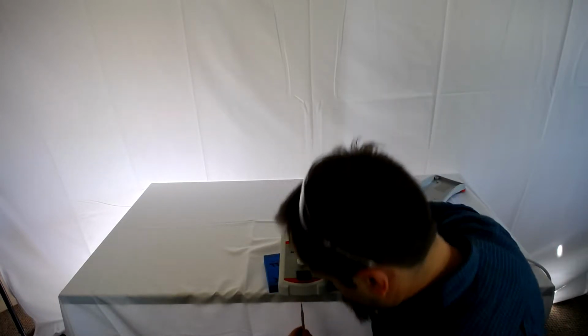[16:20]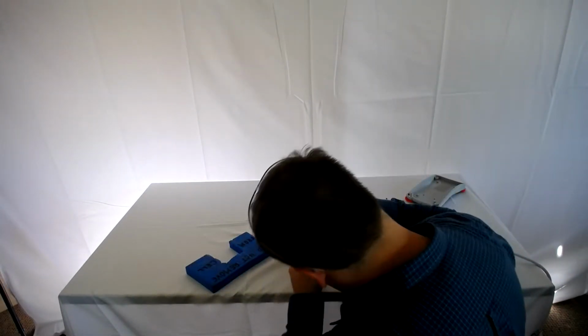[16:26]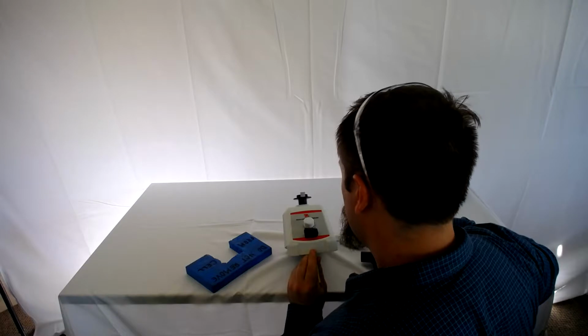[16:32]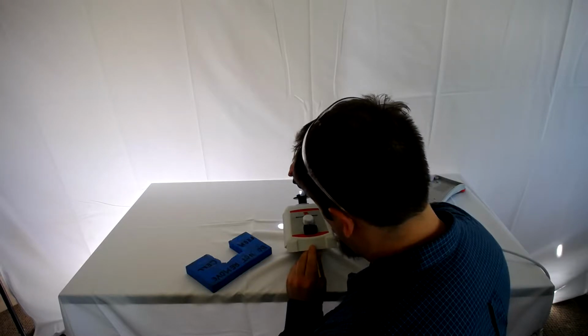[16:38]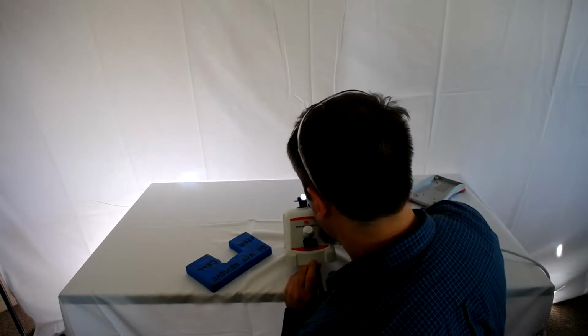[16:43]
To see. I was able to get this before. It's tough to see. It's 300, 334. 634. 400.
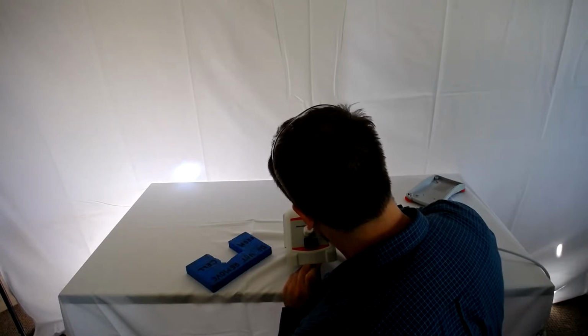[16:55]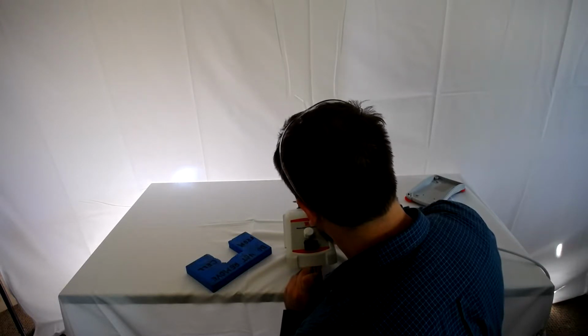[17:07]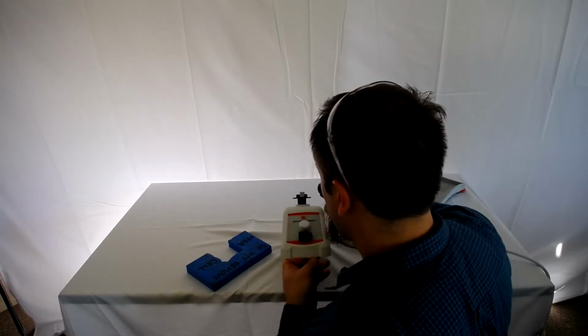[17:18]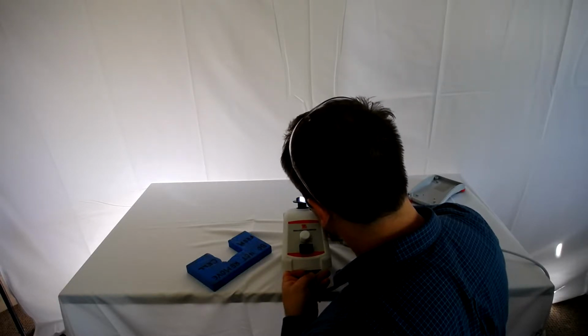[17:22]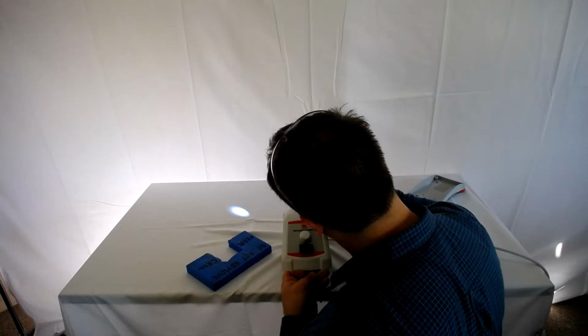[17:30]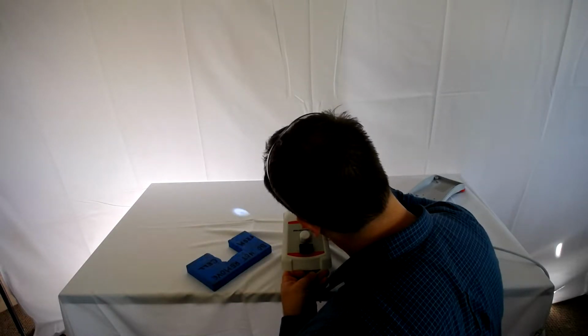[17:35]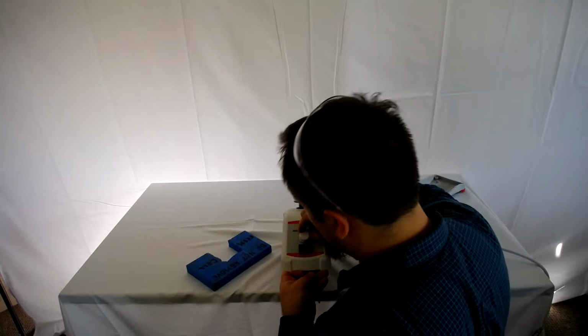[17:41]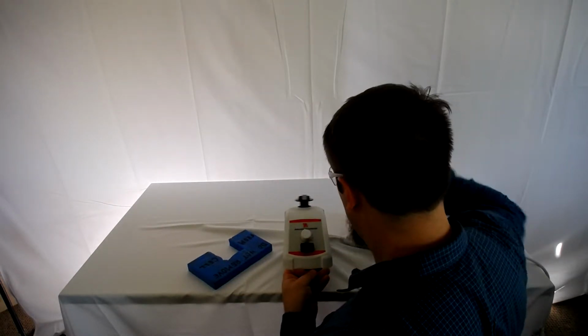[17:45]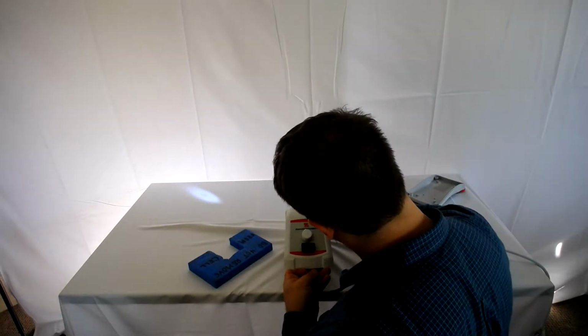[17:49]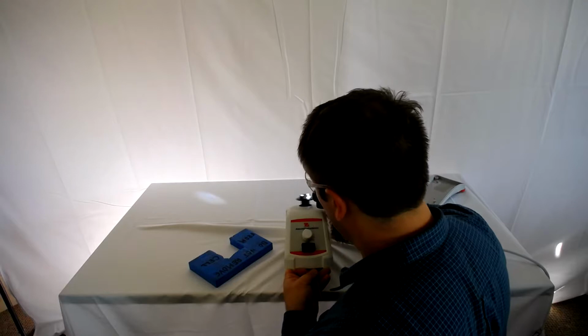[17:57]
$471. Okay, that's good. So when we do the video, this won't be necessary, right? I'm hoping not. The problem is, it's more for reference. It is necessary to get it correct in front of them.
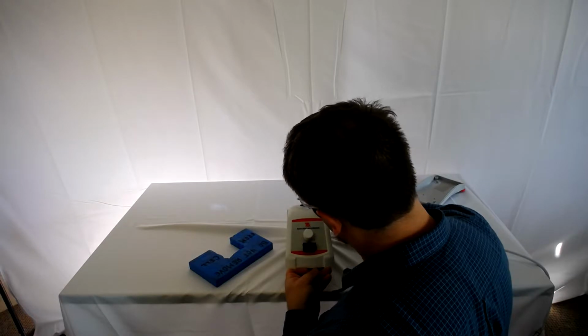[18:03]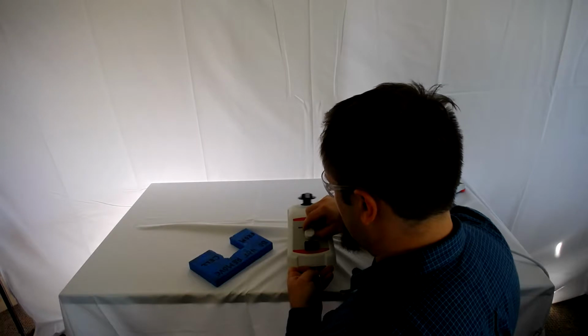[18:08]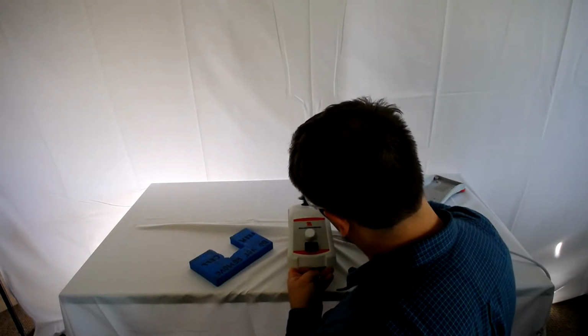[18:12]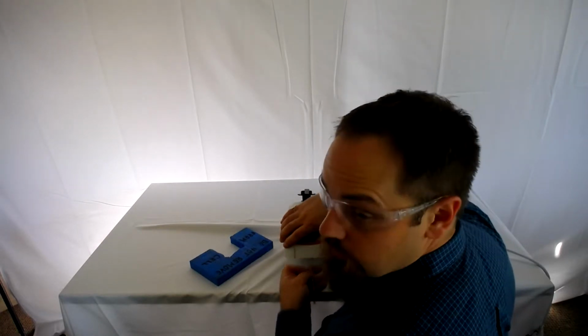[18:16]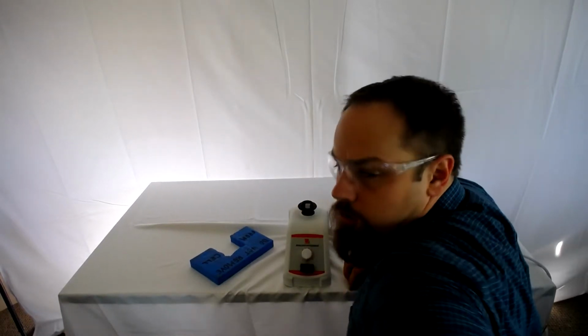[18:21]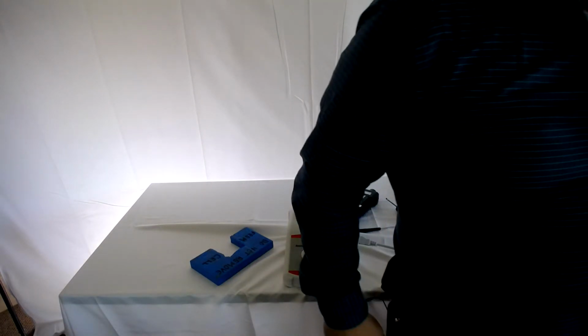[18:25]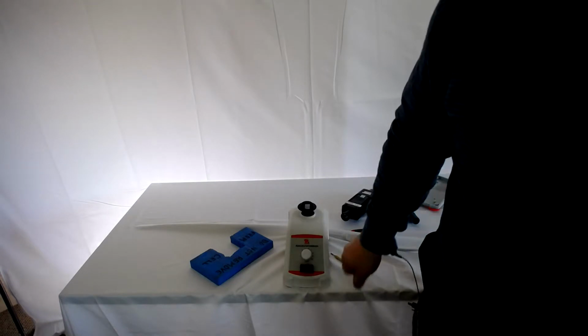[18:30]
Yeah, 2440 for the 5? That's not good. I think we can try 120 volt. Oh, this is a 120 volt. Yeah, this one. Is it plugged into that? Yeah, it's plugged into this, but I changed the voltage. Wait, how is it plugged into high voltage?
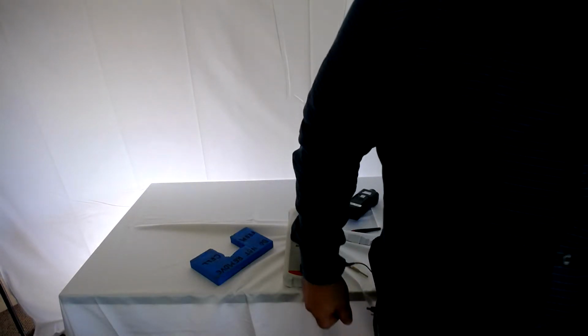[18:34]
I think it has 2 different plugs, right? Voltage here. It should be plugged here, not here. Okay. For 120. Yeah, so that's low range, and that's high range. That's only for 230 volt. Oh, okay. For 120 it's on high range. It shouldn't be on high range. That's why.
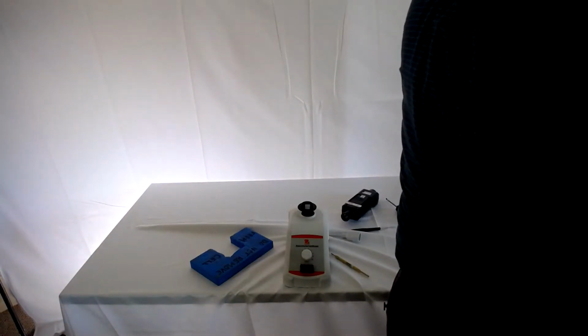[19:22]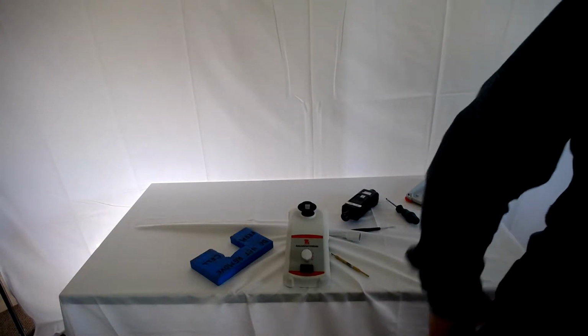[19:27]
Let's see. We have a little power cord for 120. Evan, can you see if there are any power cords? 120 or 60? 60 hertz? I think we say between 50 and 60 hertz that they're used for. I know, but technically. Okay, over 120, over 60, especially the calibration. It works. I think any one of these should work. Whatever it's going to do, we take it out.
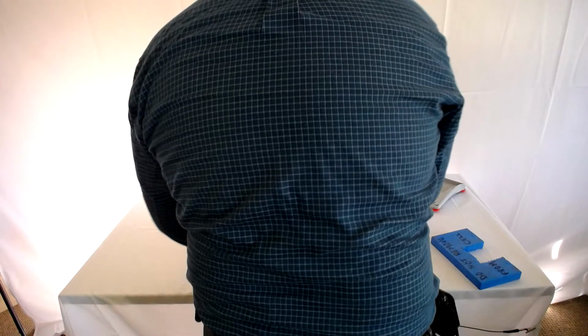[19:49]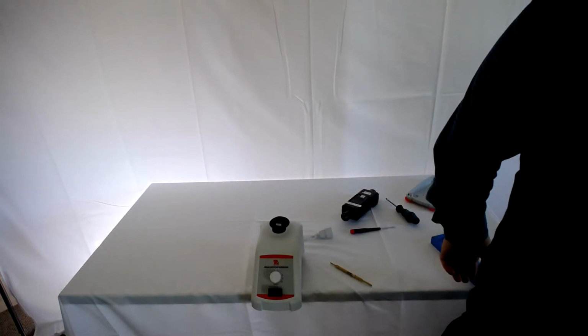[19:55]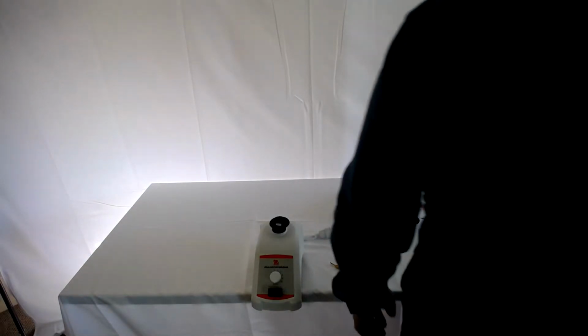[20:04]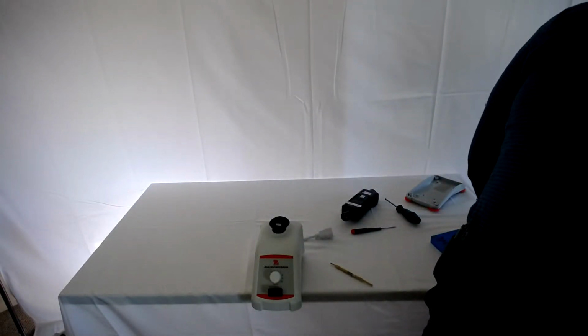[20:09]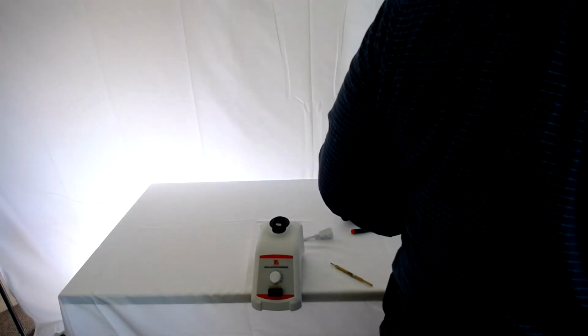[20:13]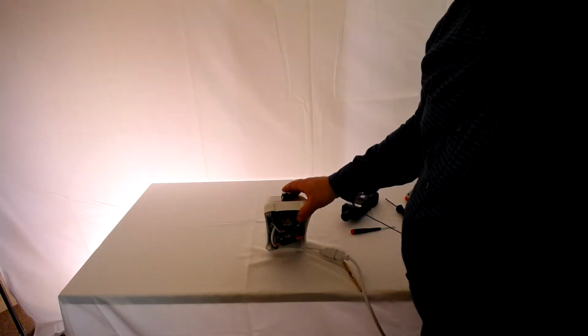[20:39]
Yes. Oh. That's yours. Okay. There you go. On 1. It was still getting. Down. Plus, okay.
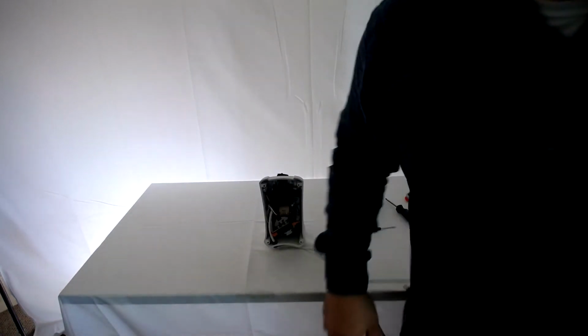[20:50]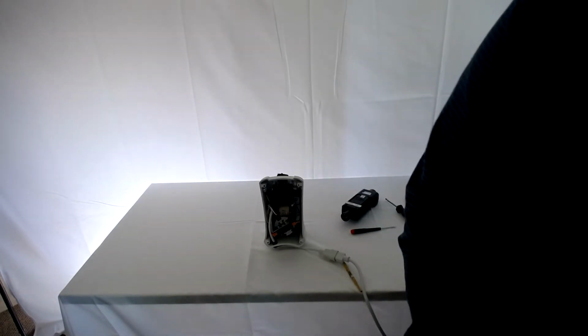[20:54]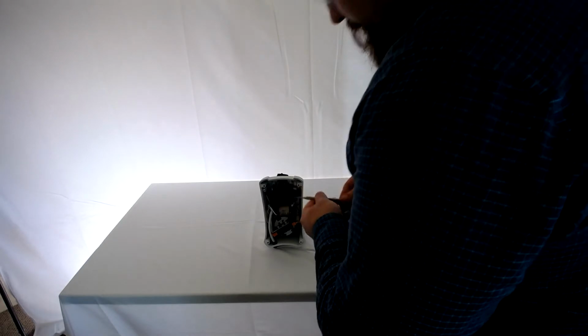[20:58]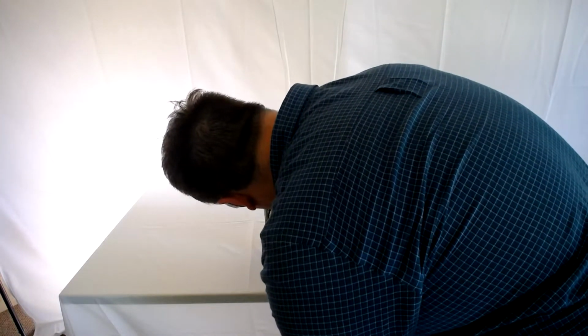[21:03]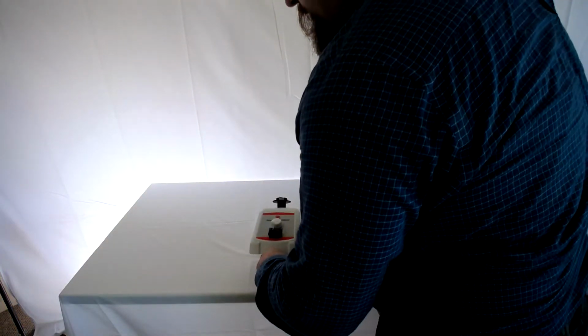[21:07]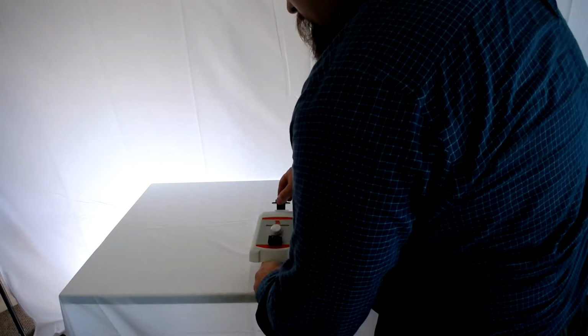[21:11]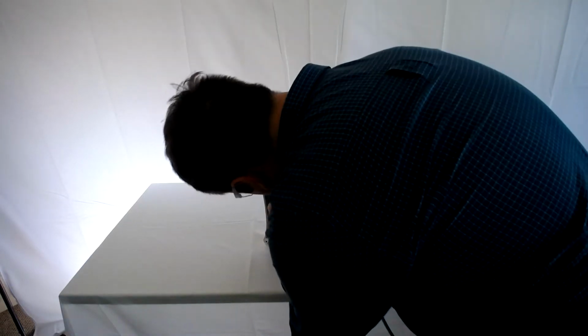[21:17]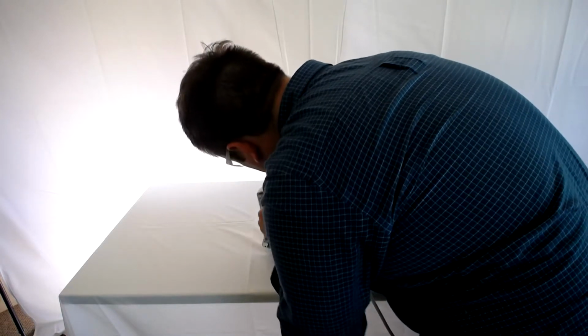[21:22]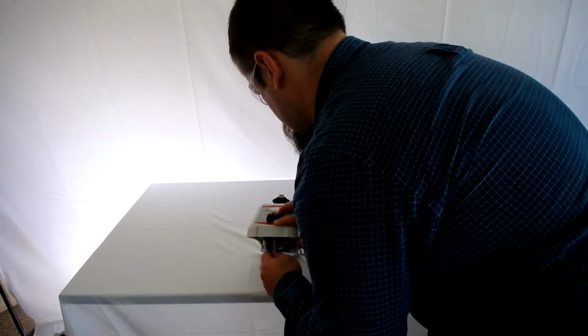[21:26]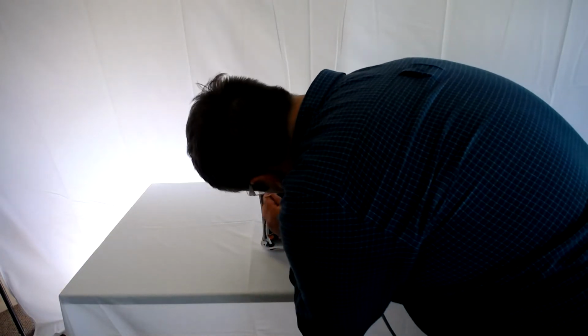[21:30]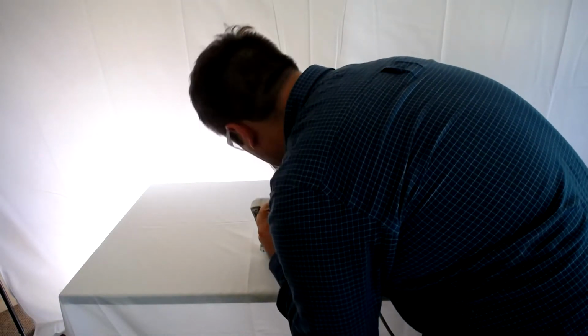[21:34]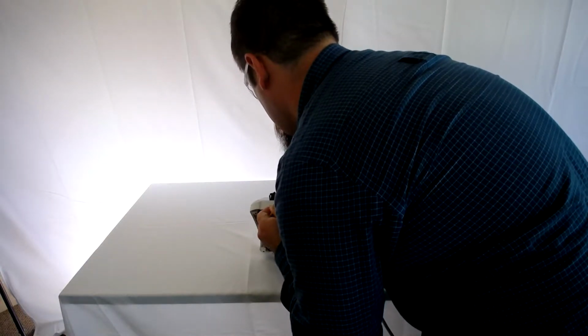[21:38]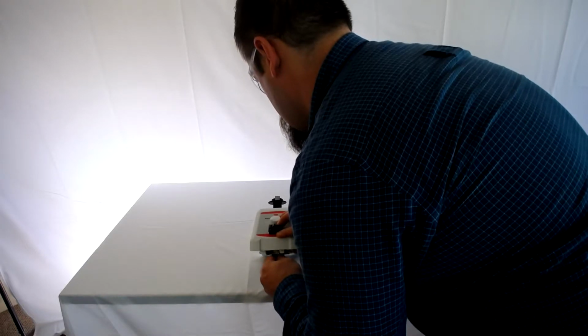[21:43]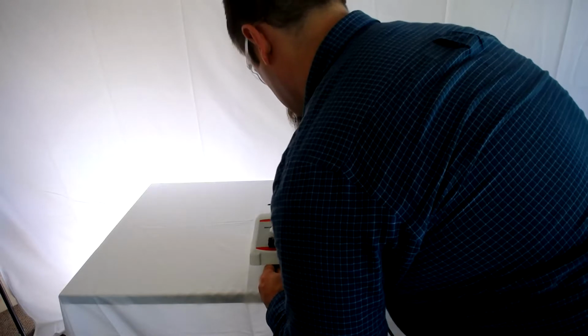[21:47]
Where did I put the trim pot tool? Oh, it's right there. Great. Okay. There. Turn it up, up until it starts going.
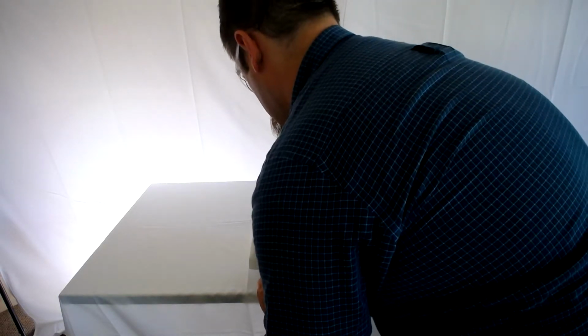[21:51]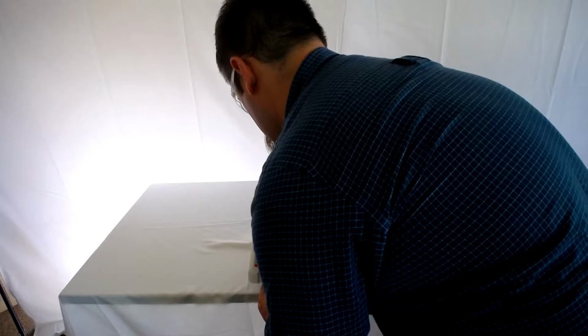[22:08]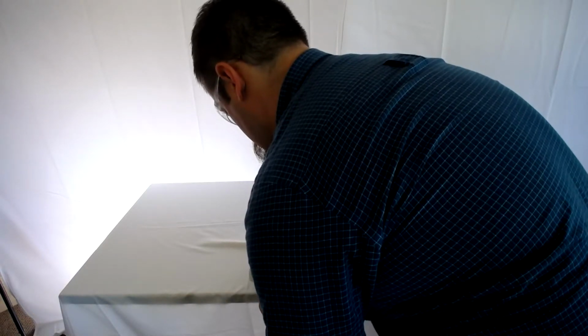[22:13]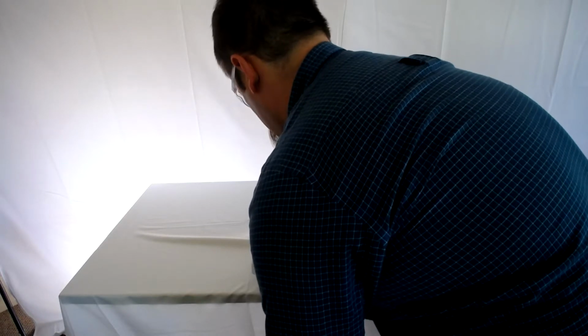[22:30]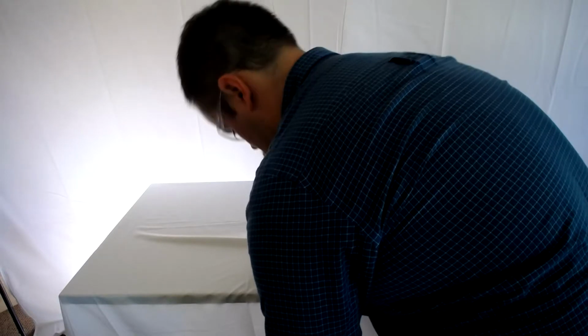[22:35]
Just down until it's within range. Good. It's 5. Yeah, there we go. That did it. It sounds like it's in range at 5. Yeah, 5, and then 10. It's in range for 10, yep. Okay, cool. All right.
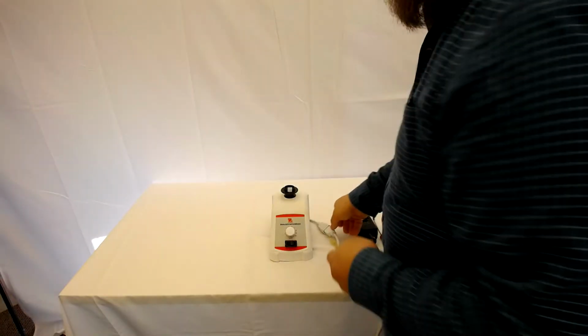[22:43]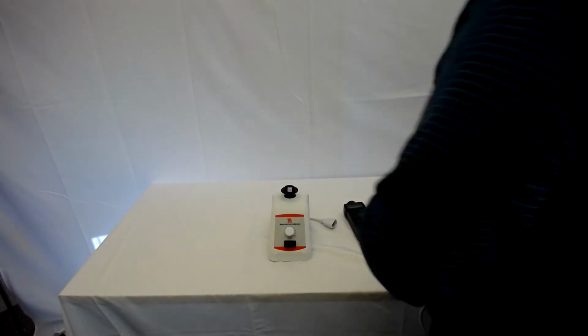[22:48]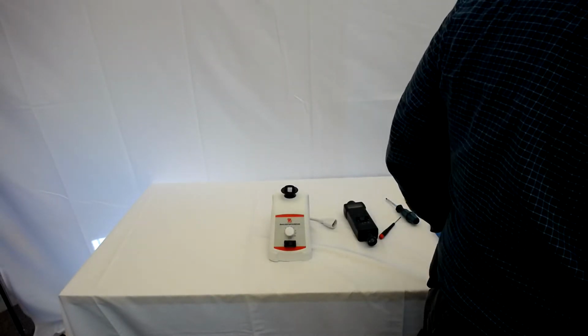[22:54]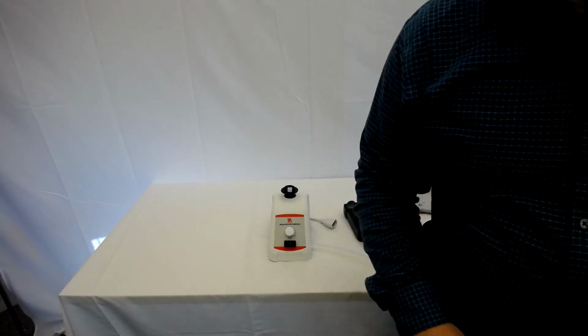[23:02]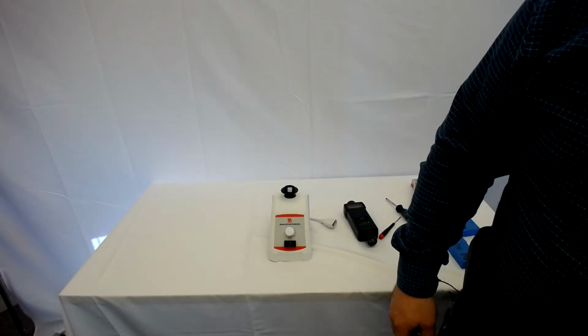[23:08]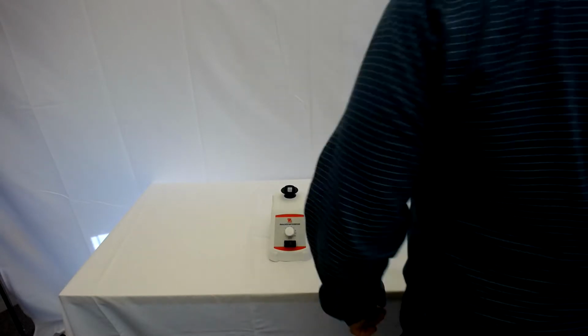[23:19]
So that's the calibration. I thought it was easy the first time I did it. So it said 120, but it wasn't actually delivering 120. It's weird. You have a different outlet for 120 and 230. I don't get how that works. I'm not too sure. All right, then we're going to testing. Approximately 3,000. Yeah, we'll have both power plugs. We'll do that.
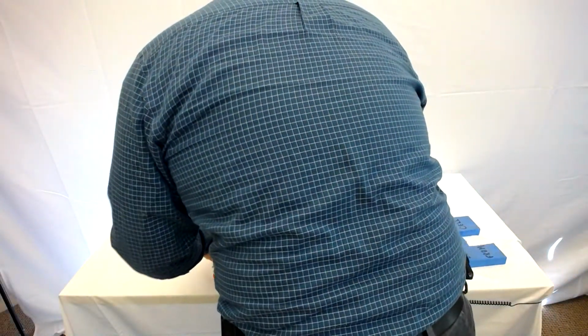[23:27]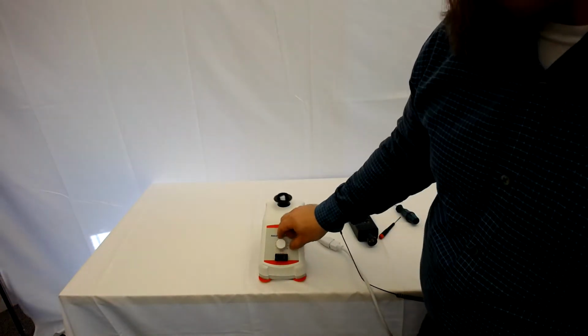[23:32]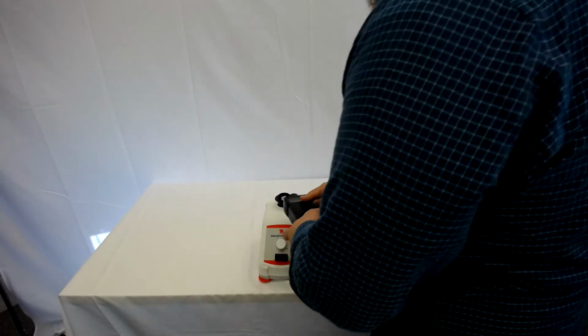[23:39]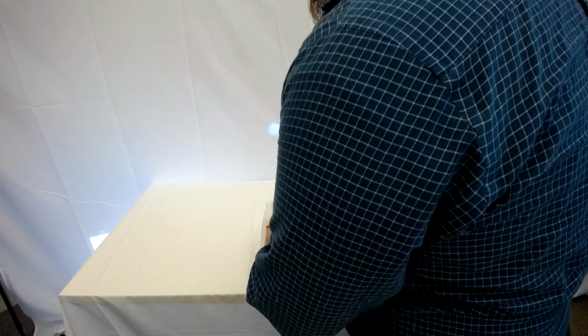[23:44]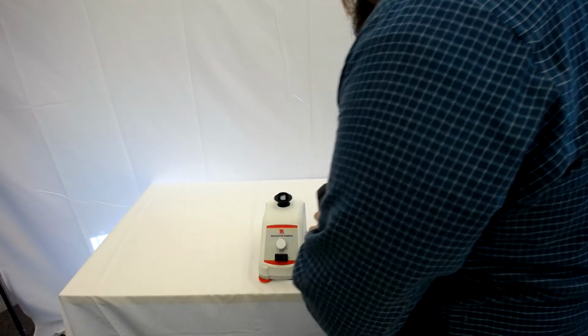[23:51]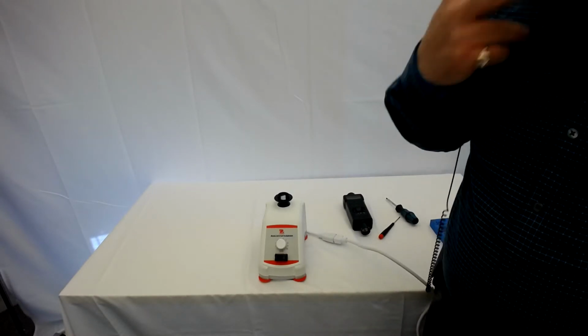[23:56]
So now we're going to test. Just put it back on the base. Drop it down to 5. Check that it's around 1250. It's at 1366, which is within the plus or minus 250. Yes.
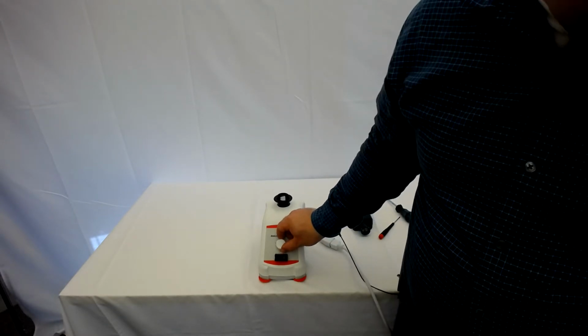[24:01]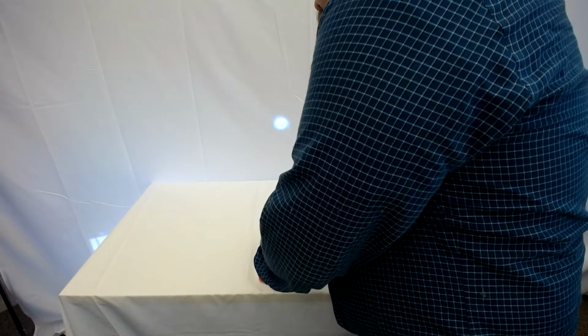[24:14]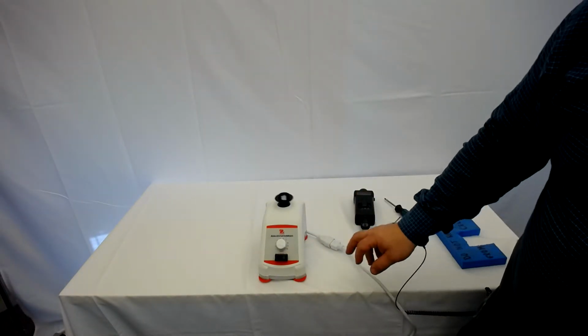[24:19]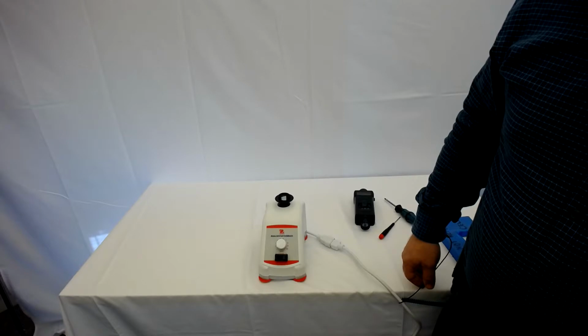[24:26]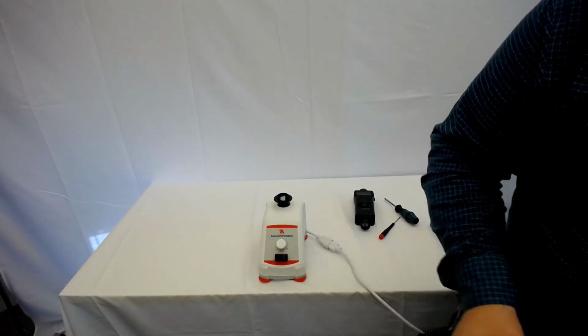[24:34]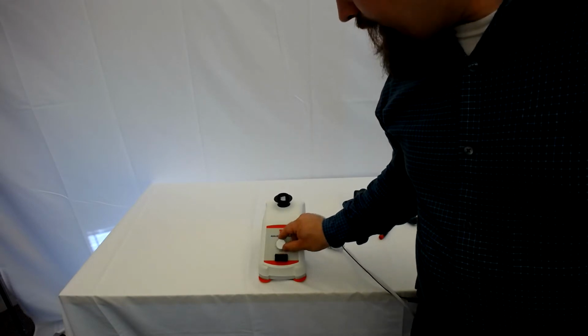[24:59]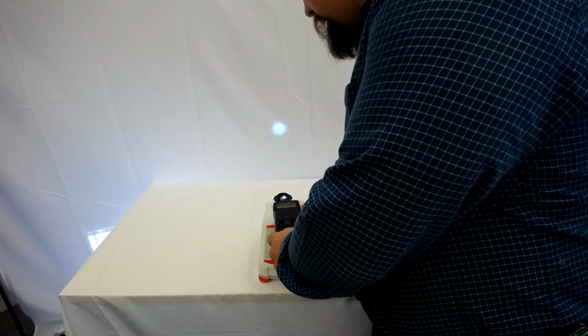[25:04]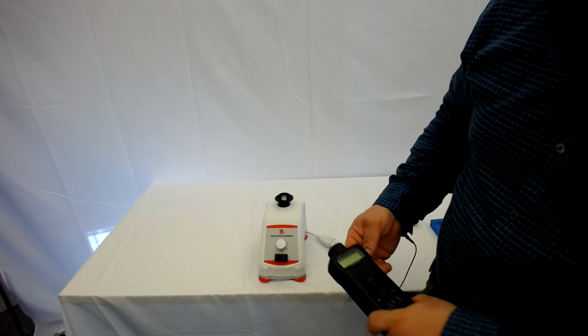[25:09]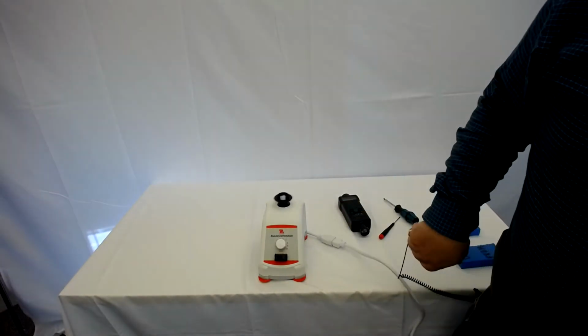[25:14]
Okay. Back up to 10. 3,319, which is within 3,500. Turn it down to 1. And it goes slow. Okay. There's the test. We go back up to 5. Test it again. Good. Back up to 10. Test it again. Several checks on this. Good. Okay.
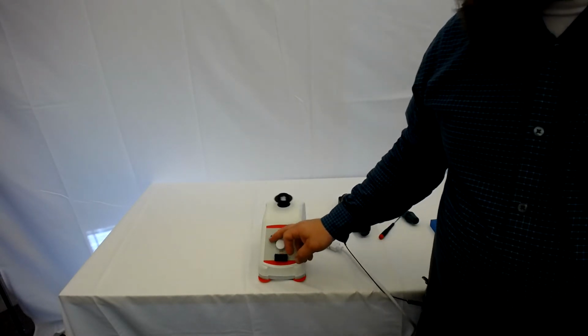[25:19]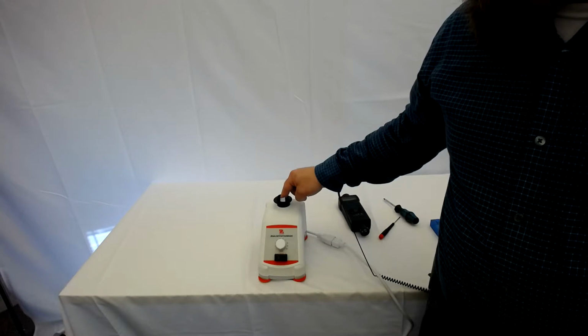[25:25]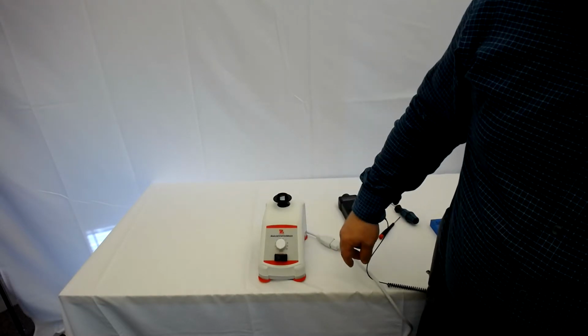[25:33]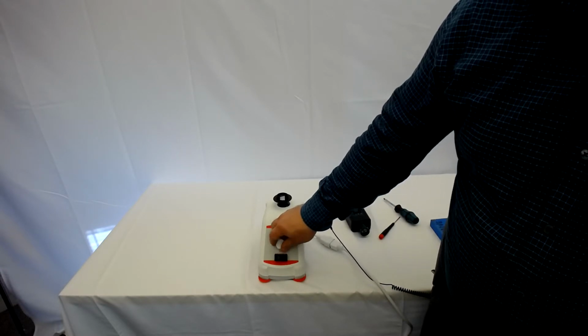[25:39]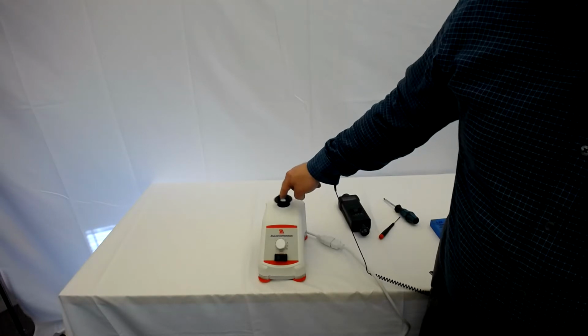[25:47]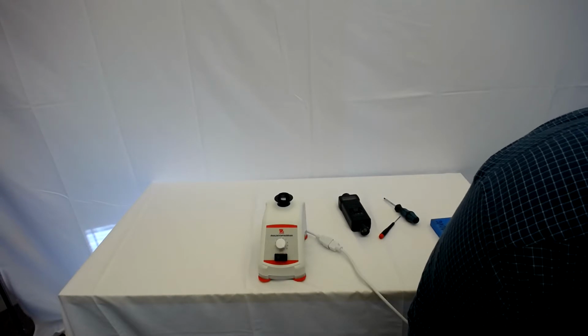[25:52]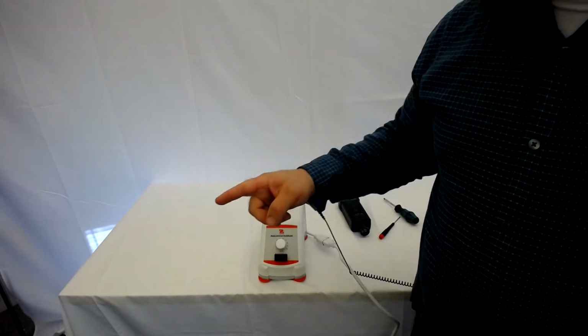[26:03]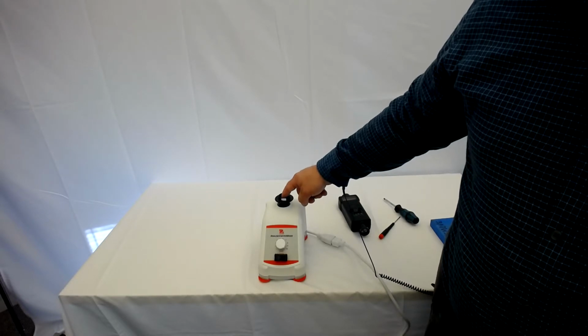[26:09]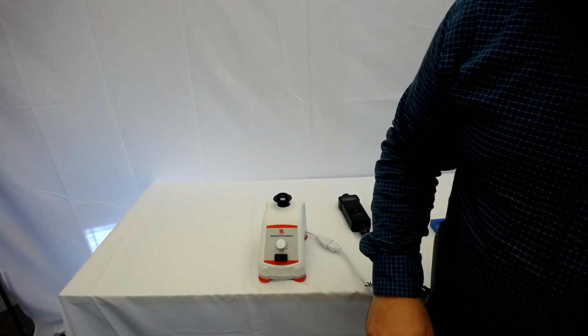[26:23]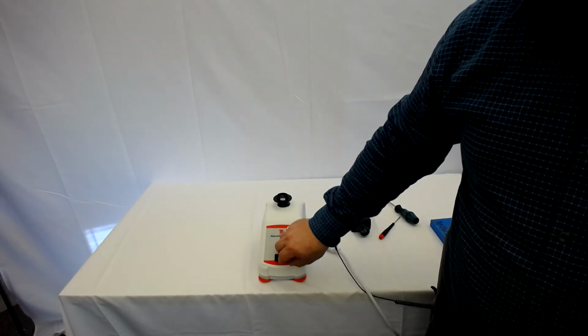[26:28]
Okay. Turn it off. Put it in touch mode. Standby and then touch mode. So turn the unit to standby mode, then to touch mode. I think that's straight out of yours. Originally it said to off mode and then to touch, and it's actually to standby mode and then to touch. Press down on the head mount to see if touch mode will run. Good. So it's just changing off to standby, even though they kind of mean the same thing. No, they don't, because this is speed off. That's off, like this knob is on and standby. Yeah.
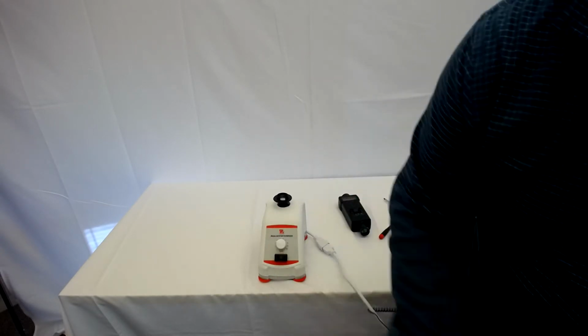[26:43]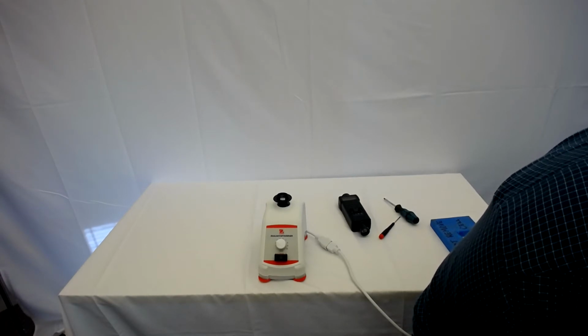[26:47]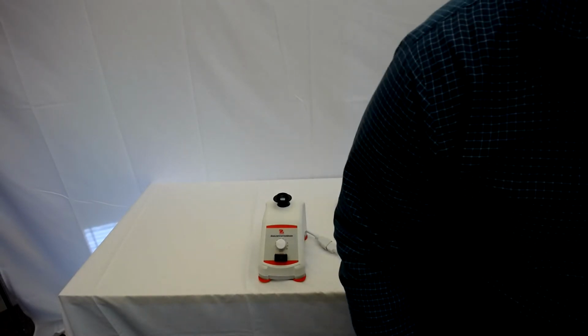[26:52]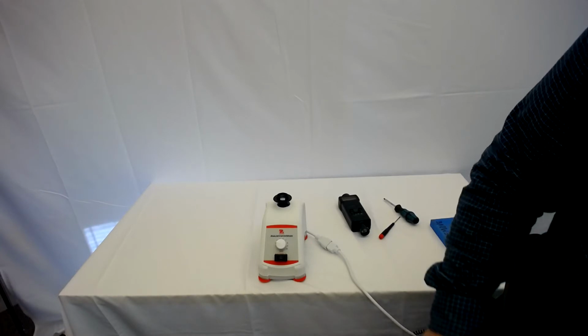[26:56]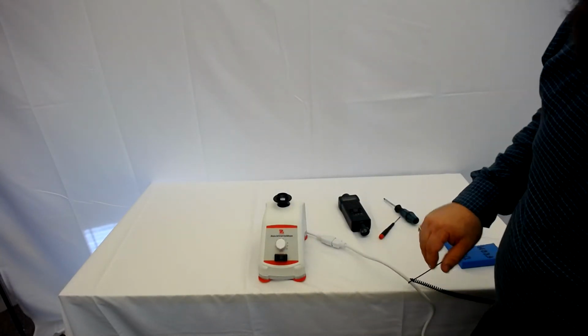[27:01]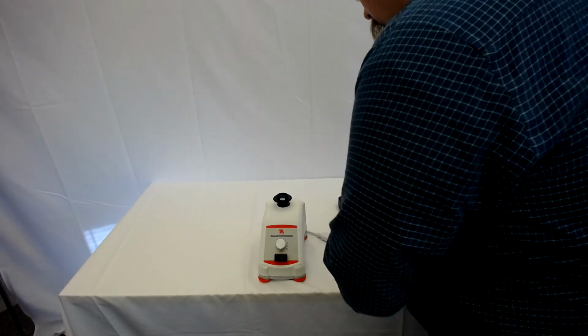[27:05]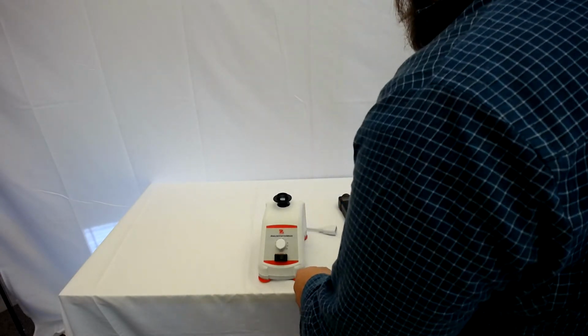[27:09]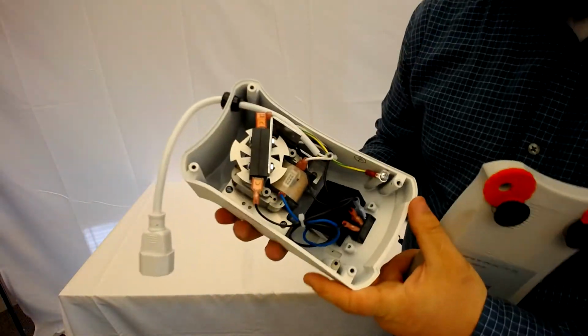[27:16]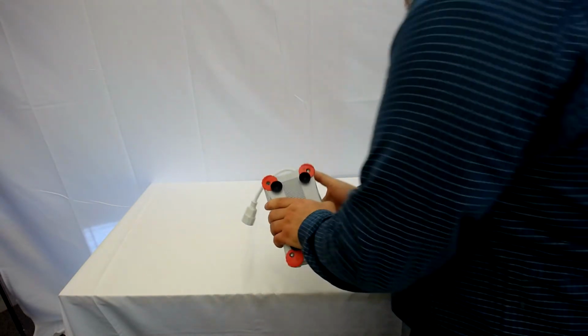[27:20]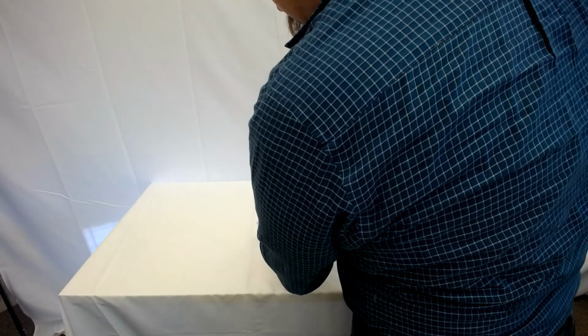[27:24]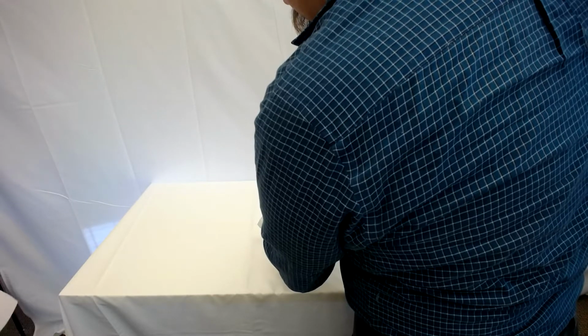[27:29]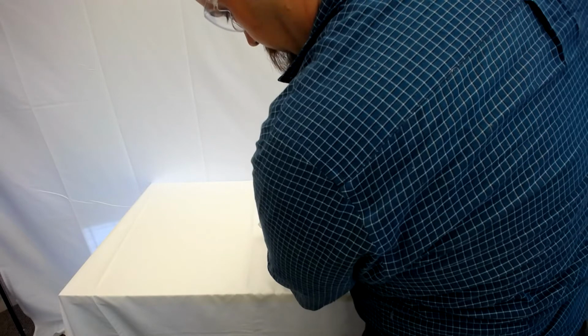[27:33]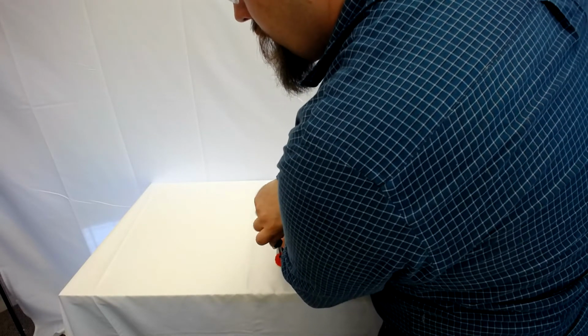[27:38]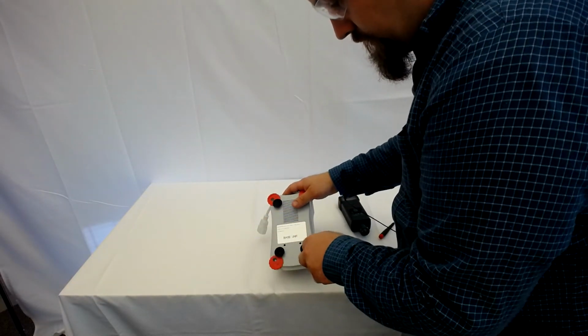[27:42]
Okay, turn the rocker switch back to standby mode. Glad we're doing this. So it's 2 times. You saw that? Yep. Turn the unit off. Now we can unplug the unit, push the switch back in, make sure all the wiring is still in place, and reattach the bottom housing. 1, 2, 3, and 4.
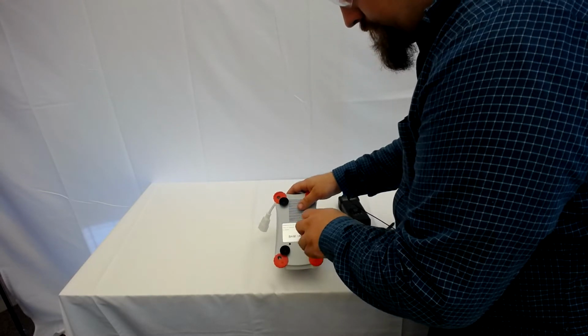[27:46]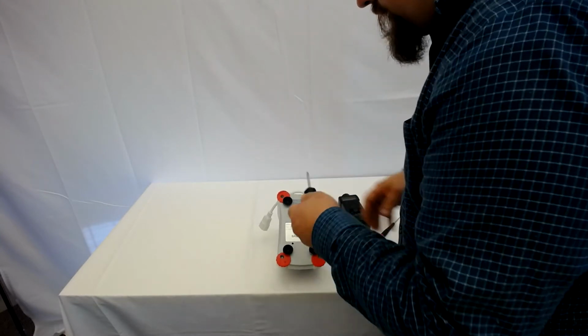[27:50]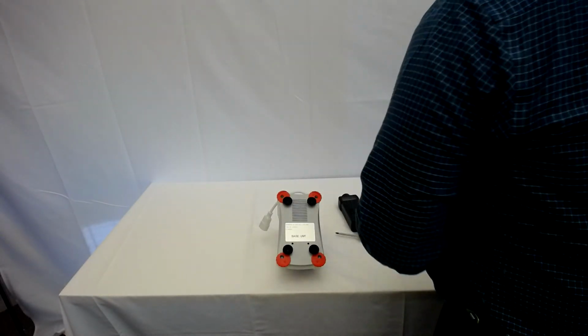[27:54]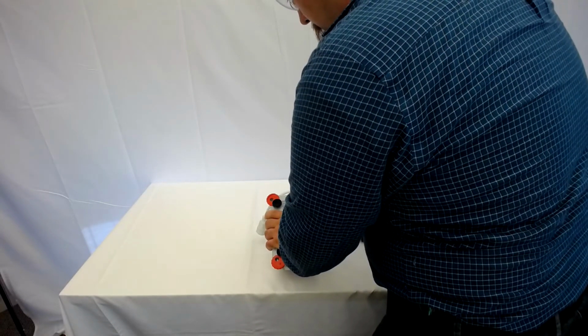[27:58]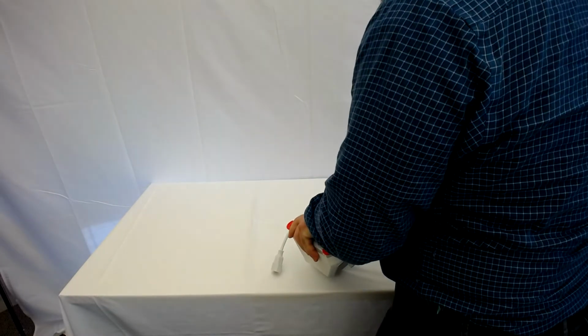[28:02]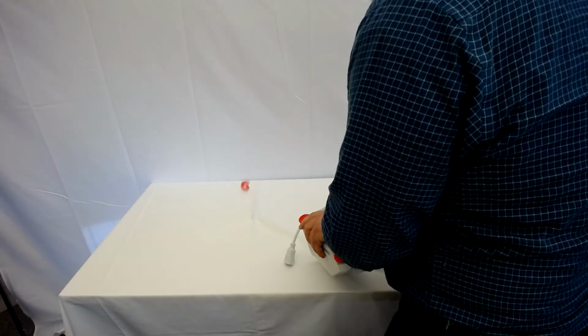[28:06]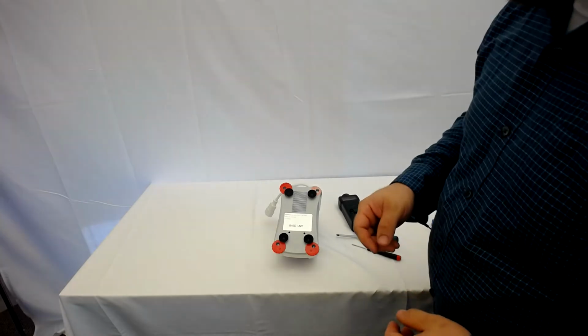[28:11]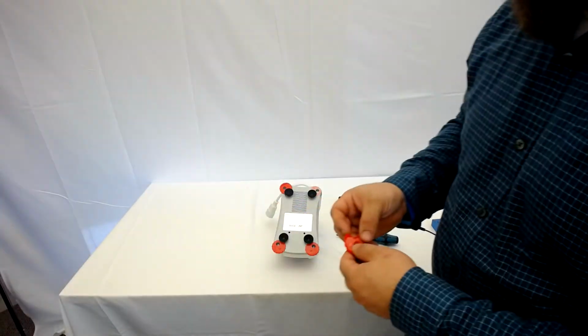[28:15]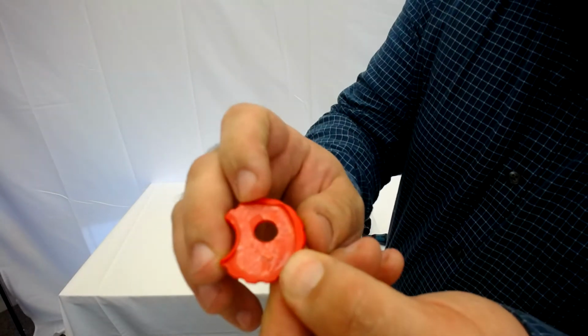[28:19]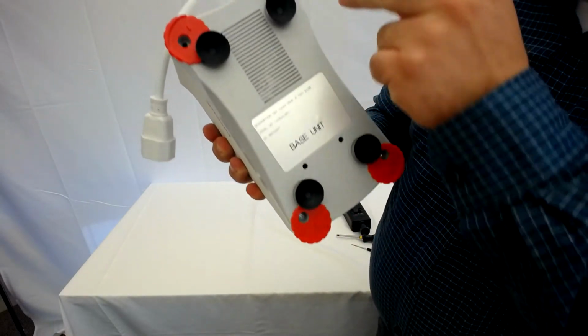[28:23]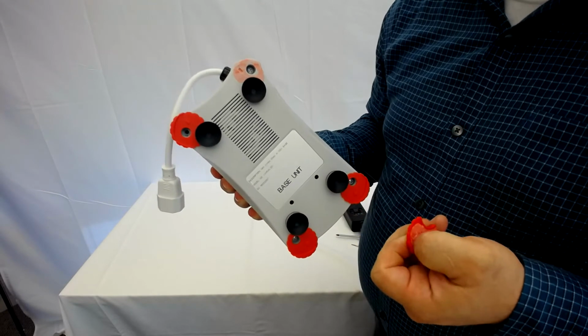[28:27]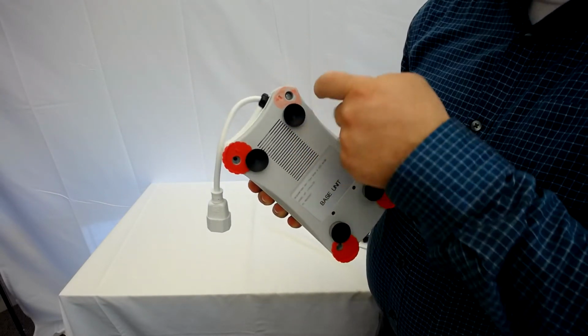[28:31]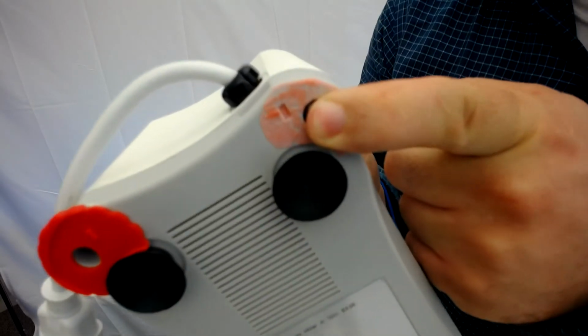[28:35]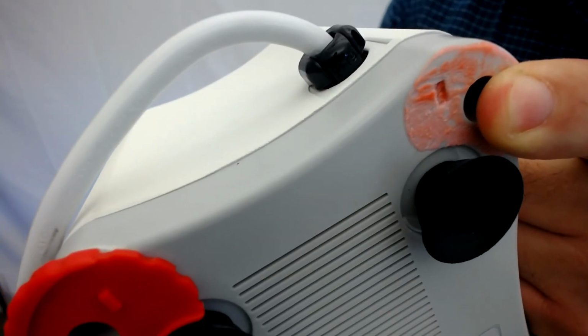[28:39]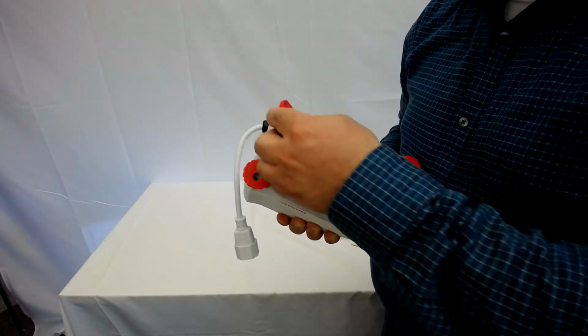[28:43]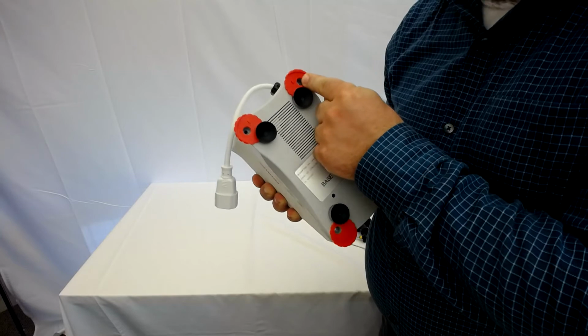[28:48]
Okay, next we are going to show you what to do when a foot pops off. It really takes a lot to get a foot off. So the foot here has this little tab that goes down into the little recess here. If after the foot breaks off the tab has broken off in that recess, the foot can be glued on flat, which just positions the foot back on.
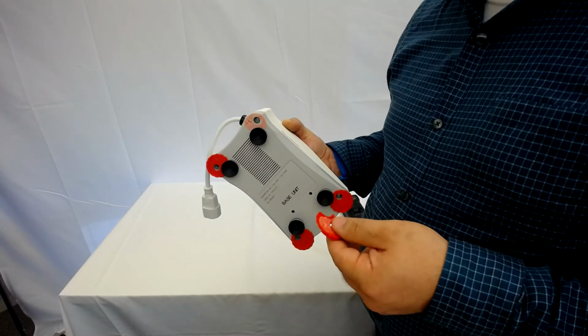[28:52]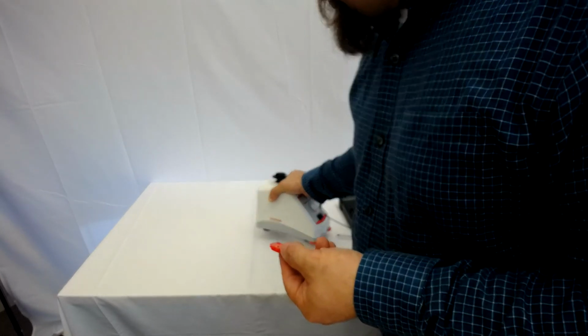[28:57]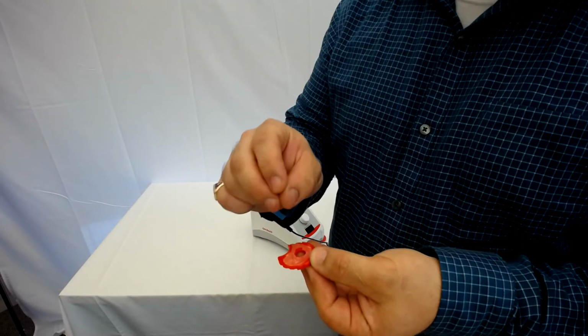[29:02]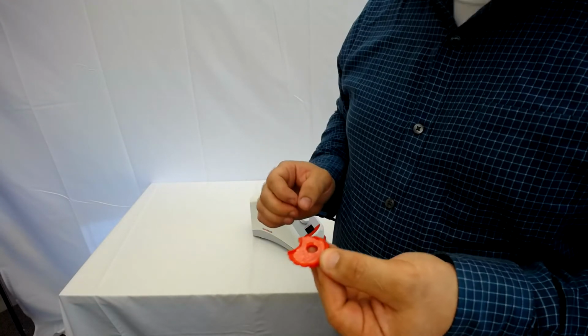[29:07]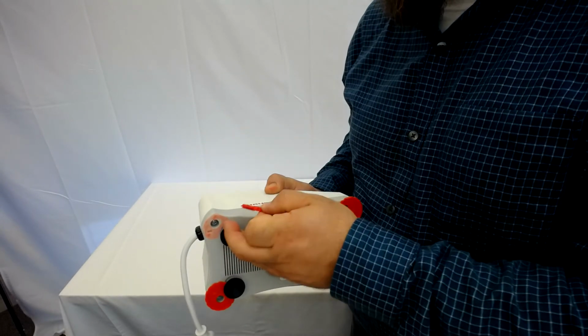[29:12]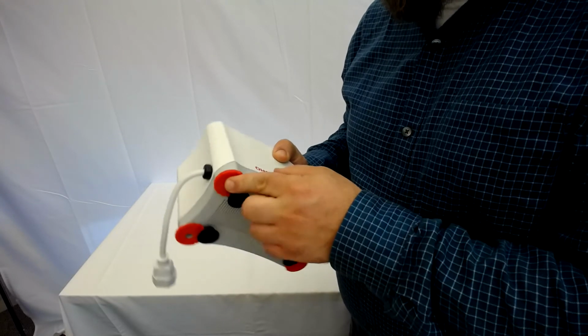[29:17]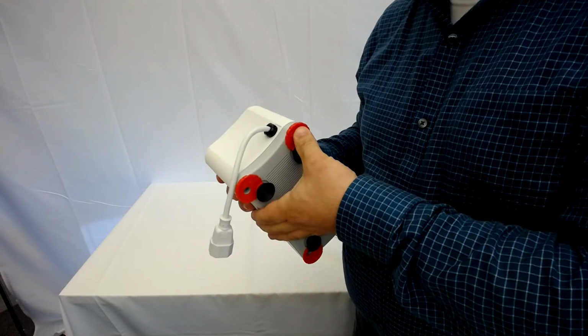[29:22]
Do we have any glue? It's no big deal if we don't. I'll leave the foot off so that we can do it. Okay. So what you're going to do is put 11 little dabs of Loctite 411 on the foot. Now this is just an aesthetic foot. The suction cup feet are what keep it in place. Put the dabs on. Push the foot into place. Hold it for about 30 seconds.
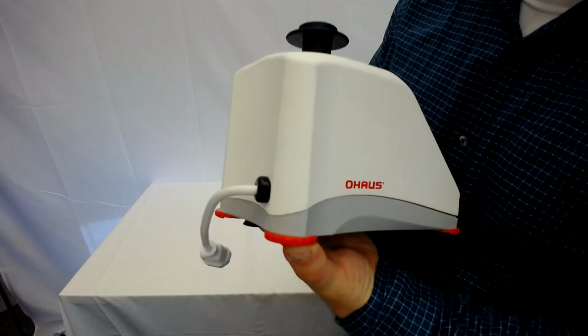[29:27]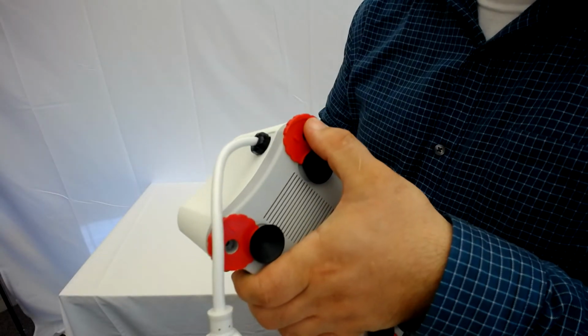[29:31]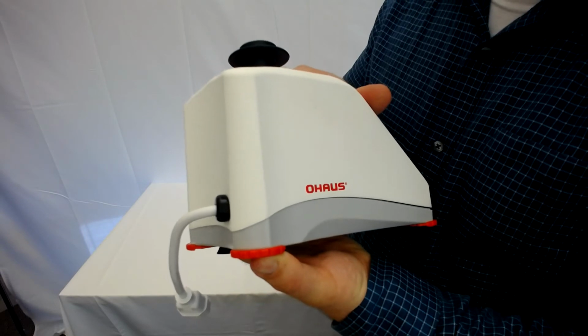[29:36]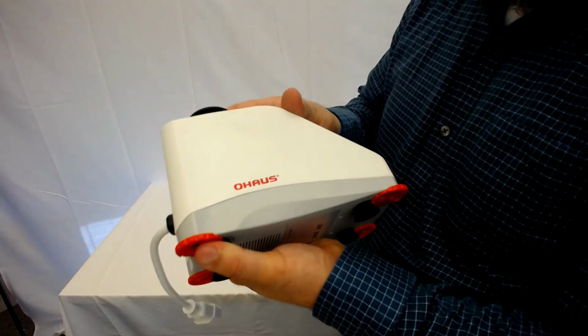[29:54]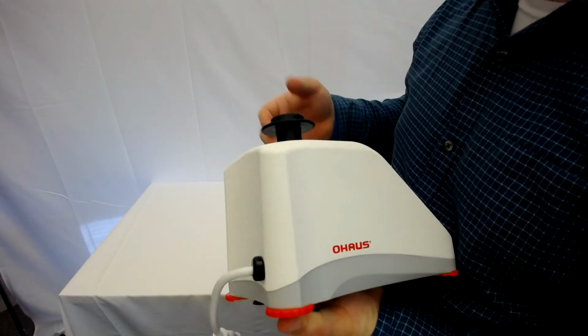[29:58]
Ensure that there are no drips around the outside. Can you see from the side again? Was there a gap that I see? Looks like a slight gap. Yeah, because I didn't tighten this down all the way. Yeah, there you go, so it doesn't look obvious. That's much better. I'll fully tighten it during the presentation.
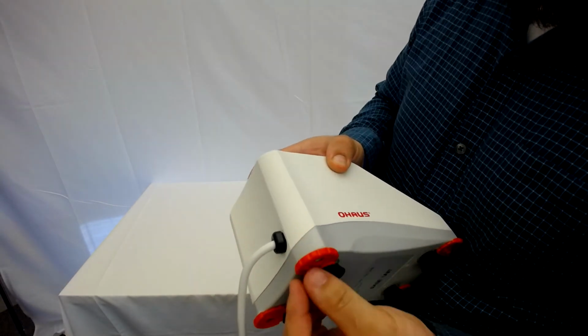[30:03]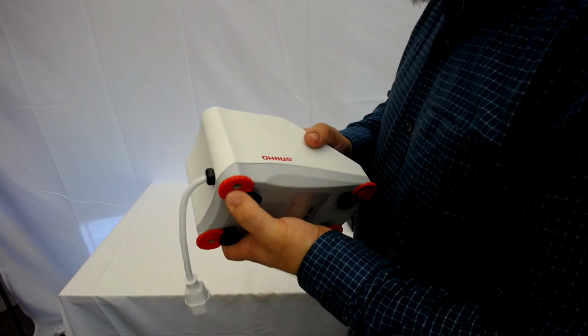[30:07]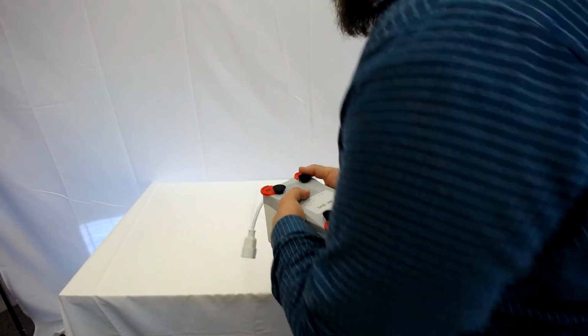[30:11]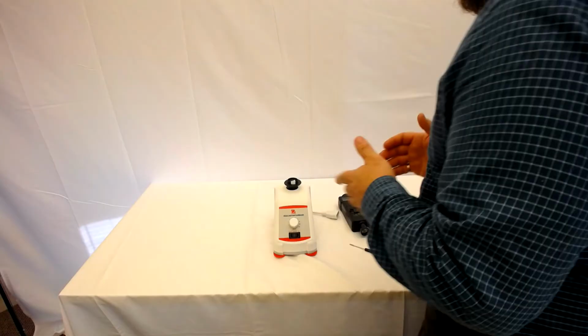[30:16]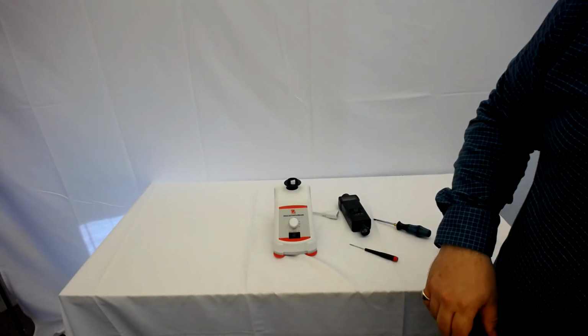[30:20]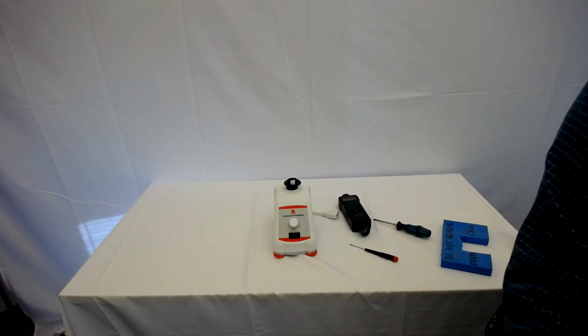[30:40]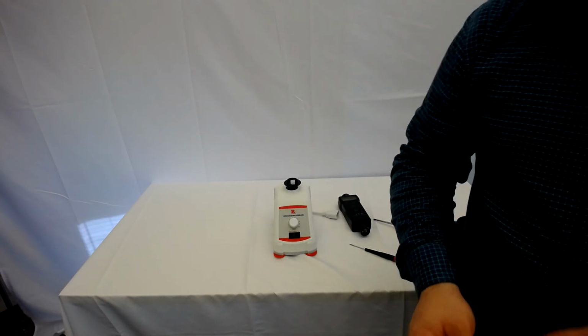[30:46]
Keep it pressed in there for 30 seconds. It takes 24 hours for the Loctite to get to full strength, but 30 seconds for it to set. And then you're good. You're going to do the testing as the final step. Go to the safety guide or the service manual for the final packing and testing. Okay. I think we should do this one more time.